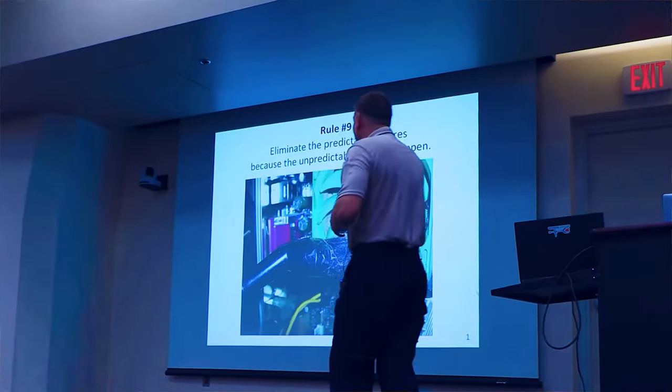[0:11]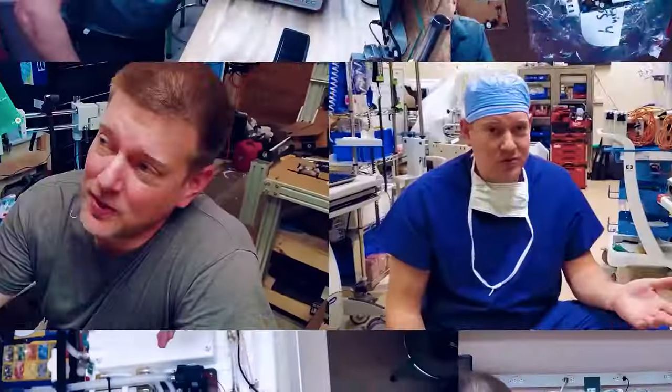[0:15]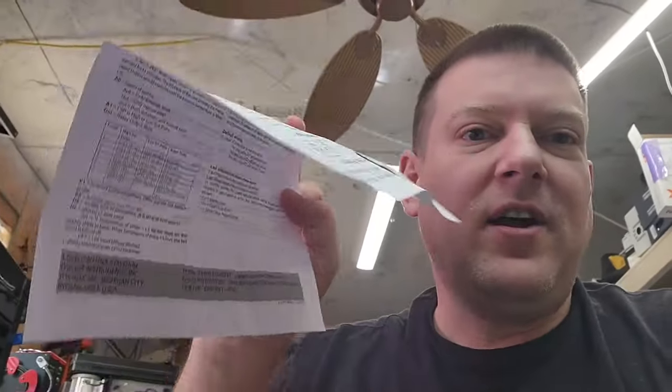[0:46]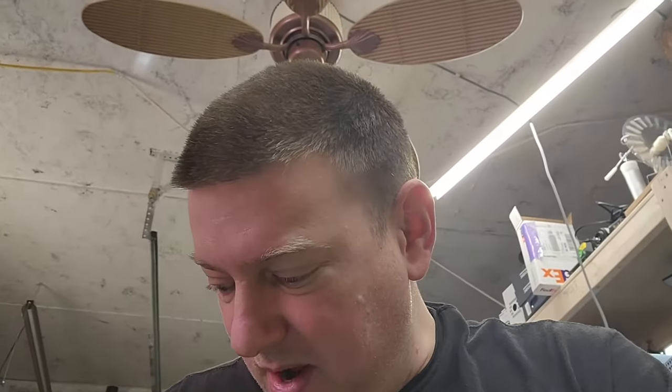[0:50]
Today's a day of frustration and learning and more frustration. Well, guys, I'm installing a generic temperature controller into a water bath, really. And the problem is the coding instructions are so complex. And this is an American-made product. Well, actually, I think the controller is made in Spain. However, these instructions were written by people in Indiana.
Is that the problem? Given I was growing up in Michigan, yeah, Indiana's the problem.
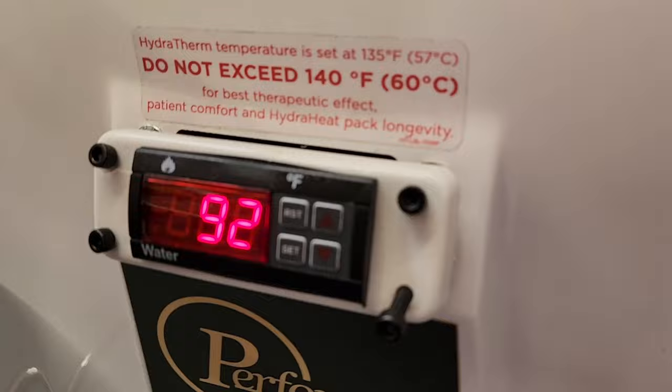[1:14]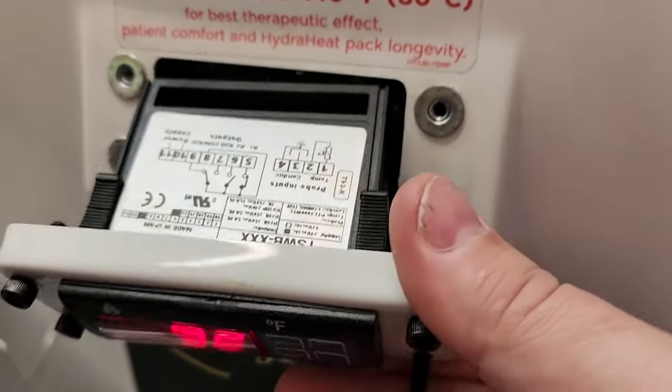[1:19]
Anyway, guys, let's go ahead and take a look and see what I got. What a frustration this is. I'll show you what steps I've taken and where I'm at. This is it. This is the Performa. This little controller right here took me forever to get in. Took me about 5 or 6 months.
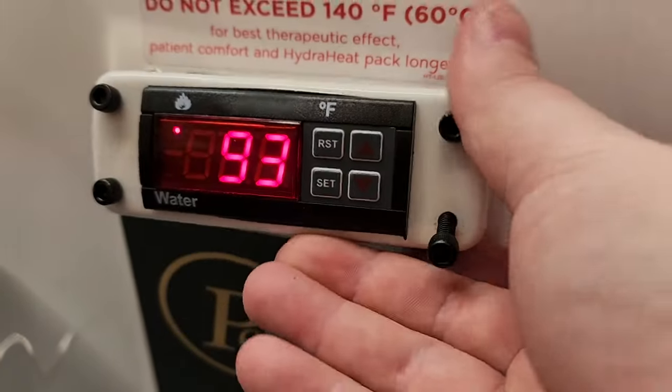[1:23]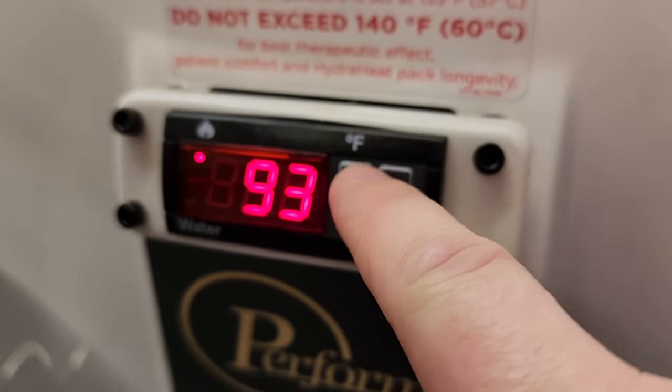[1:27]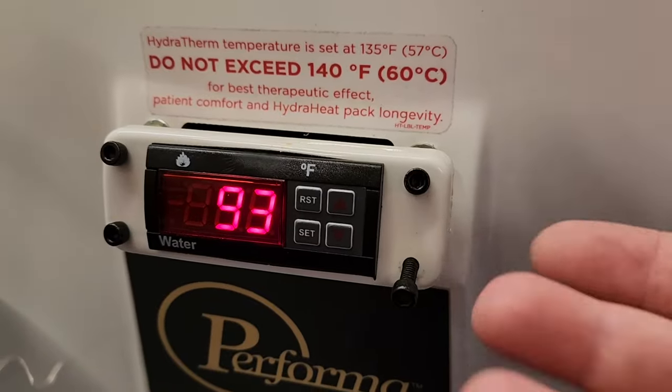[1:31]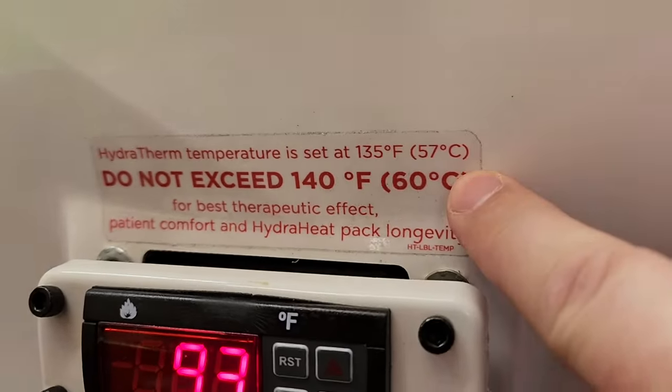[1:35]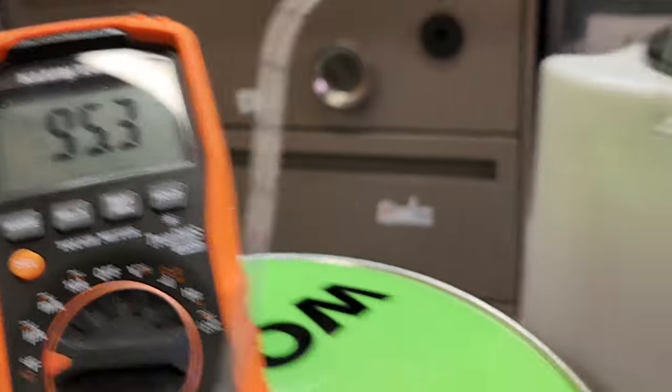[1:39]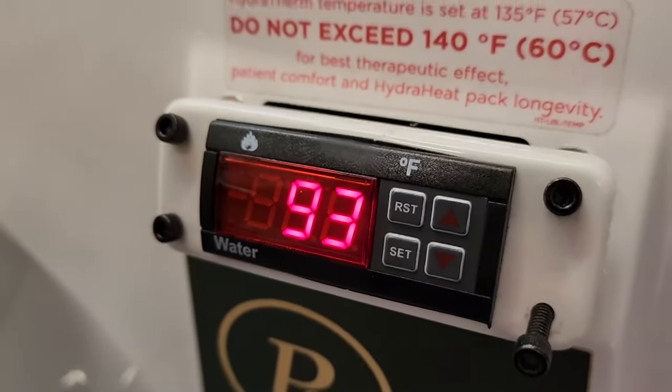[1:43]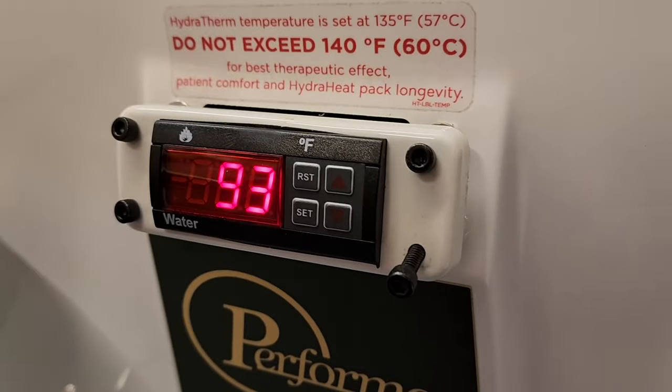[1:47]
That's the TSWB. Now, there are various models. There are some for heating, there are some for cooling. And this one here can be set from degrees Fahrenheit standard to centigrade, but right now it's in Fahrenheit because, as you can see on the instruction label, that is what they're looking for. It's currently heating, and you can see the little flashing light in the corner that shows that something is happening. It took me easily an hour to get to this point.
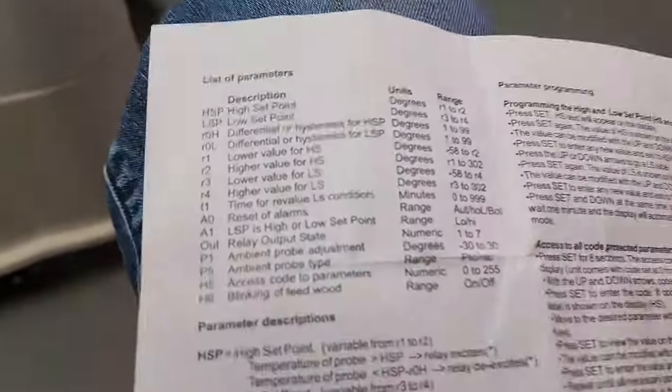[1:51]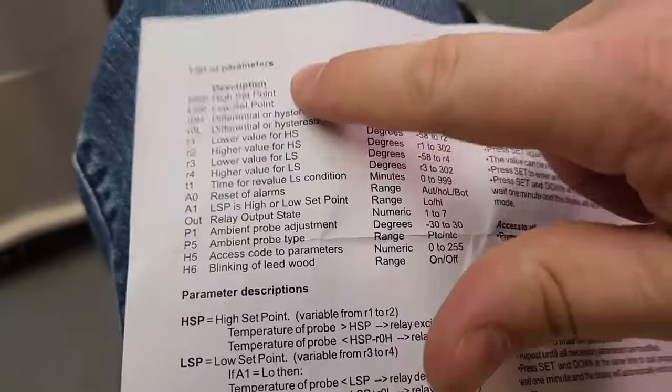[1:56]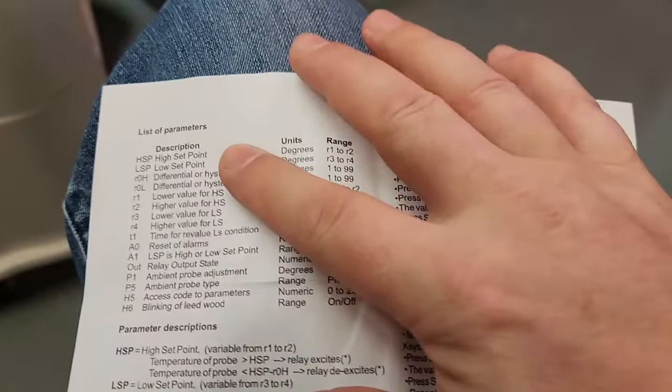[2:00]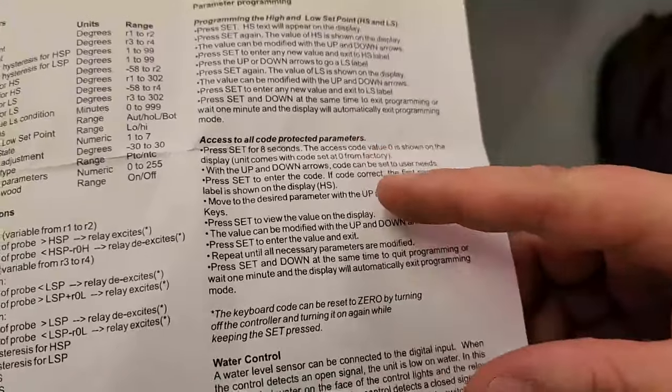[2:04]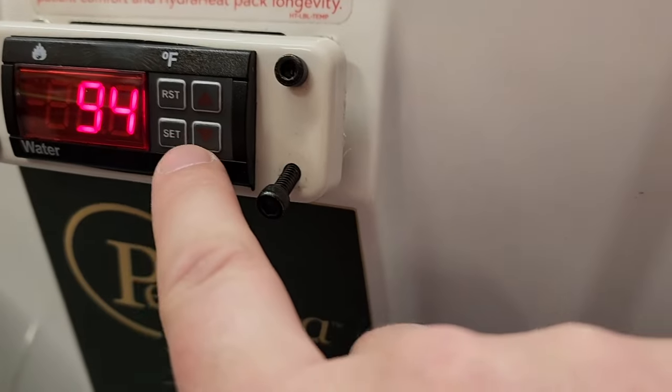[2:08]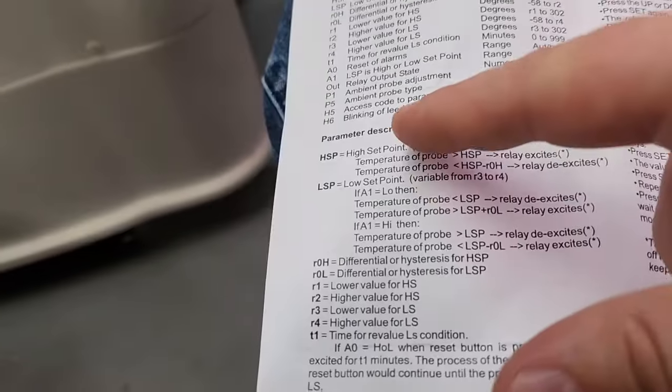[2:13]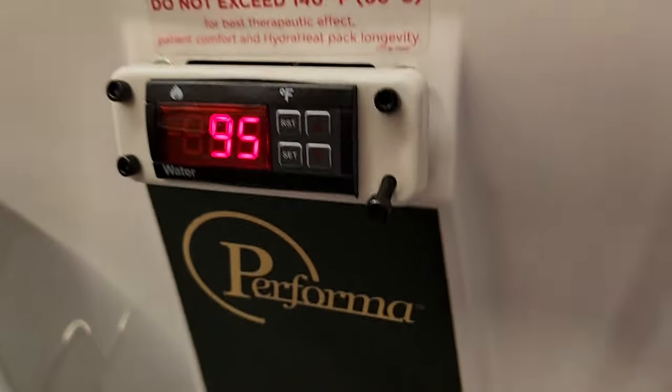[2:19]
The instructions are absolutely ridiculous. You can see that there's a high set point, there's a low set point, which is all that you normally see from the first menu. However, you have to go into a special menu, which you access by holding the set button right here. You hold this for like 8 seconds, and then it allows you to get into this extra menu of all this stuff down here. Let's go ahead and show you how I got to this point.
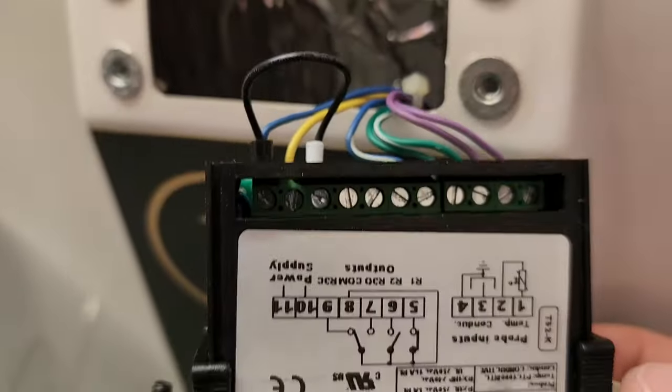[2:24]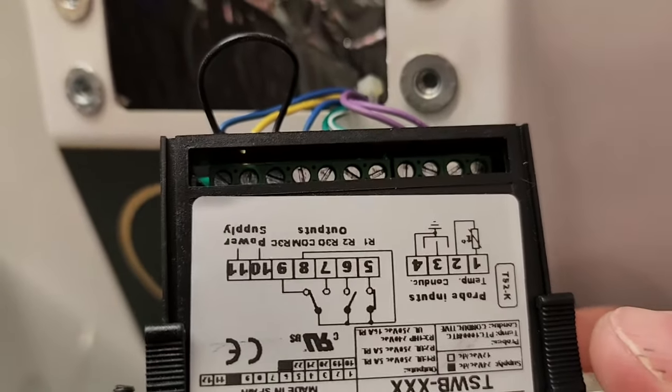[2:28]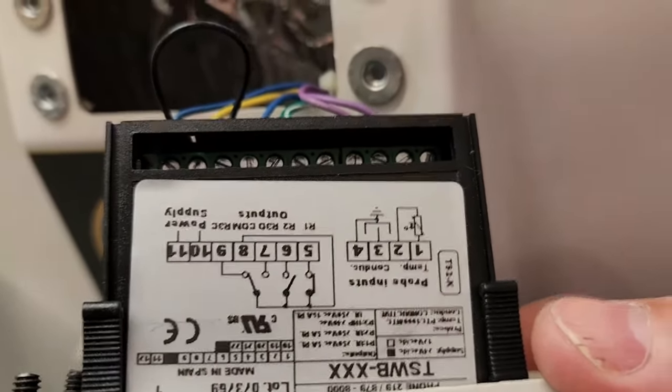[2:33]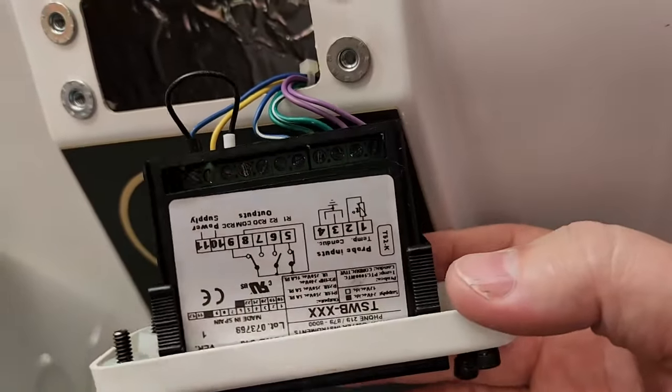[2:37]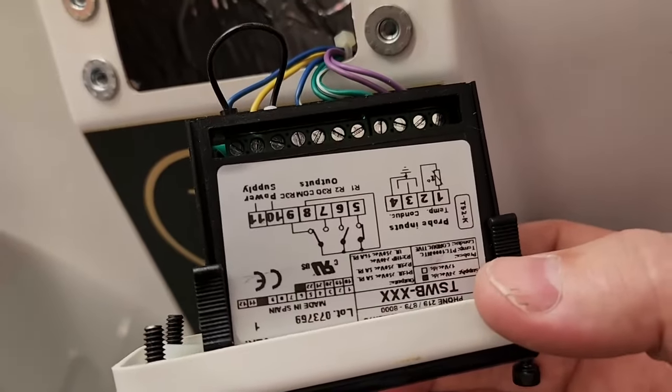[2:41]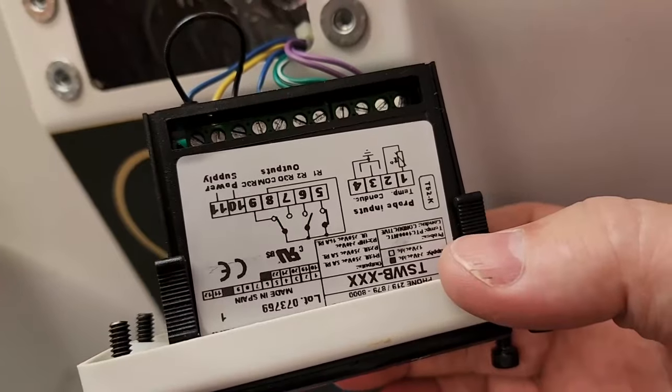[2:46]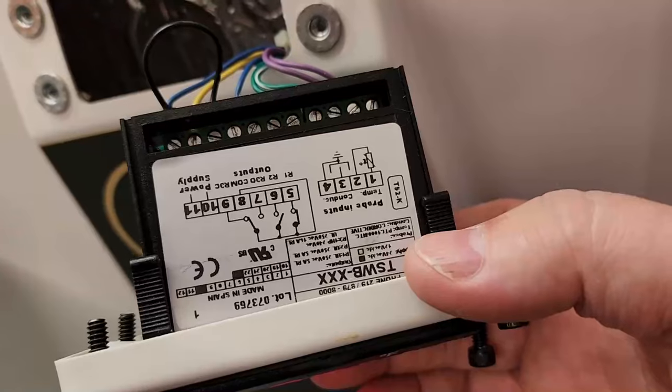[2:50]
I guess we should start out by discussing the wiring. So you can see I have one jumper right there on the power supply that goes over to terminal 9. Really weird. I took a photo of the original old unit that shorted. I did a video on that. It actually caught fire on a live stream. And that is how it was wired, oddly enough. So it disconnects at 9 and I believe at terminal 5. So 9 and 5 are both disconnected.
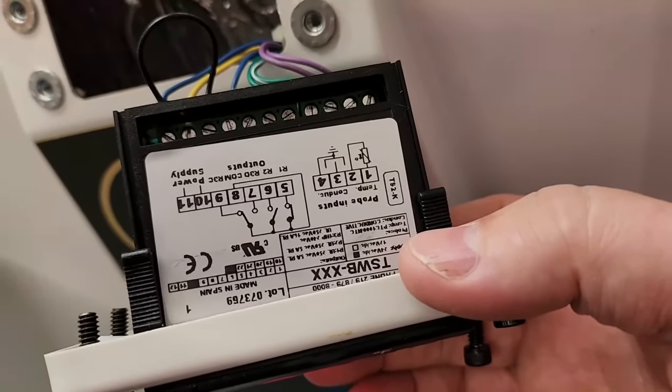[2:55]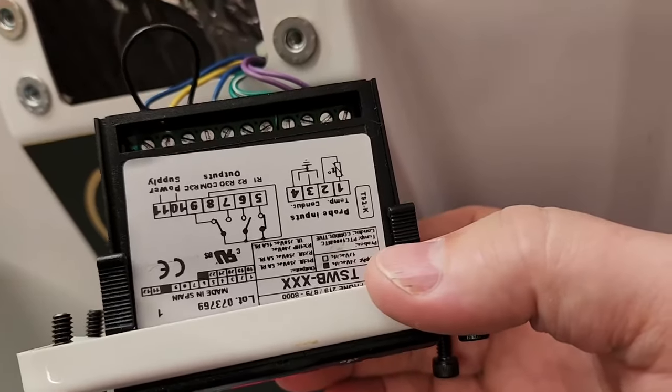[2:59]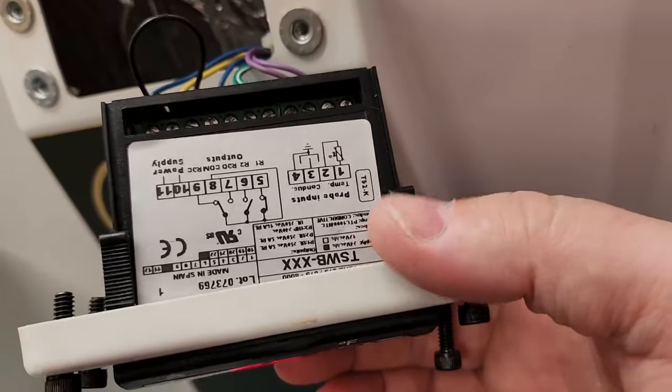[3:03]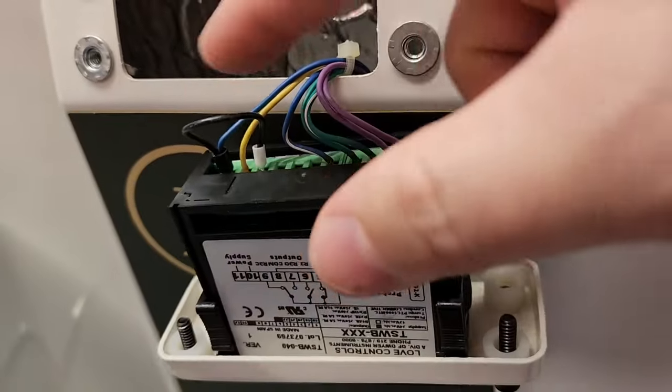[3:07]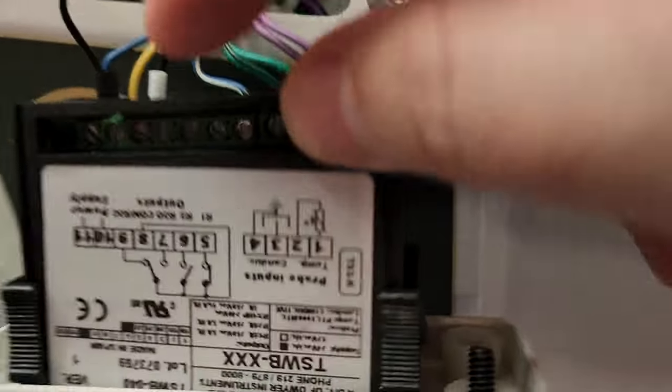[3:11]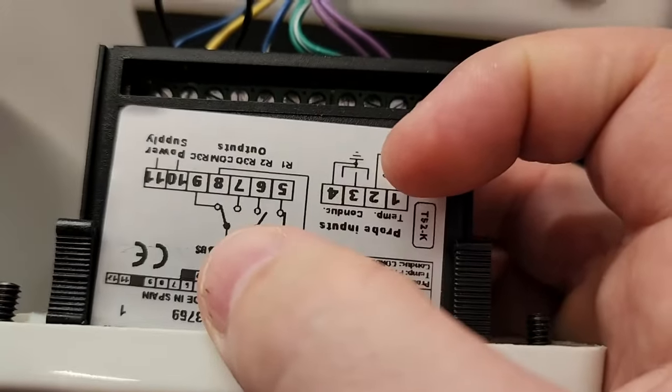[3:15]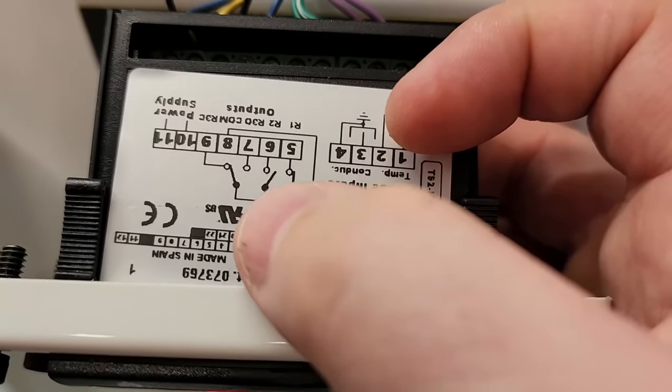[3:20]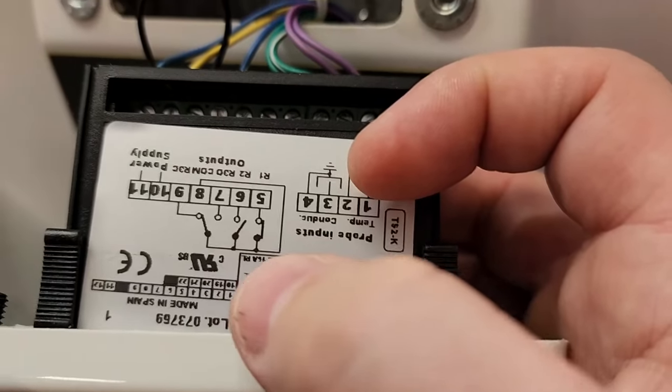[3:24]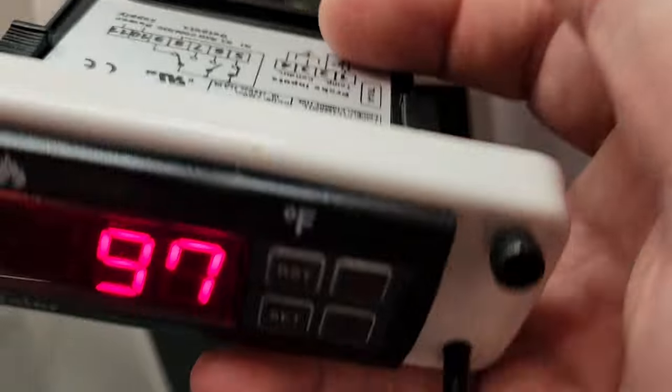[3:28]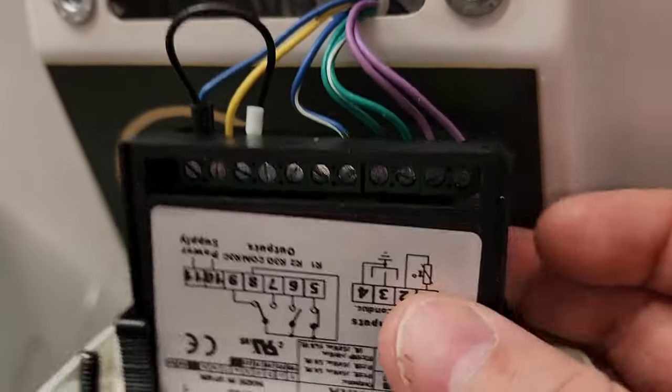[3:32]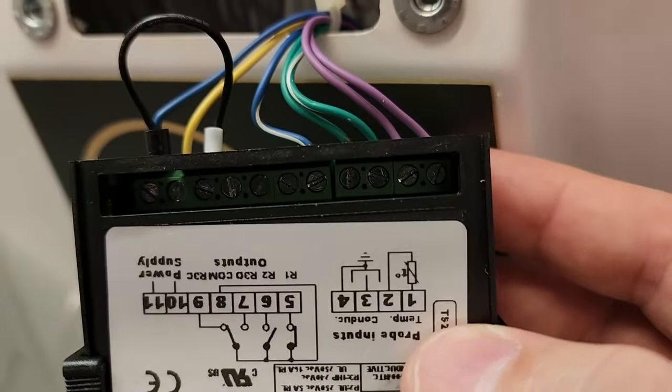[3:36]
Really weird. You would think that it would be connected to terminal 8 and then terminal 5 or 9 would be switched, but it switches both ends of the connection. It's really weird. So you can see right there that it's jumpered right here to terminal 9. And based on this circuit description, 9 is normally closed and terminal 5 is normally closed. 6 is normally open. You would think that 6 would be engaging. Anyway, I'm just hooking it up exactly how the OEM had it, and you can see over here terminal 5 is going to be disconnected.
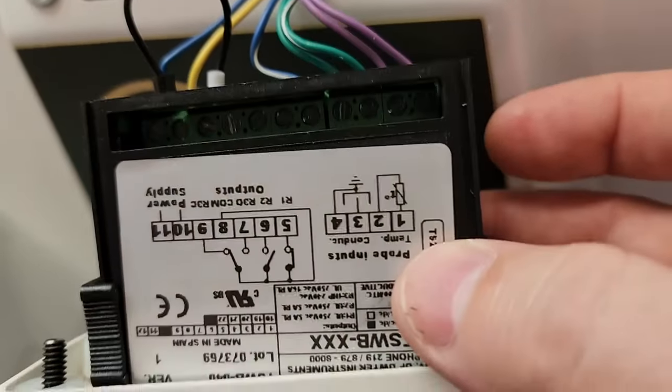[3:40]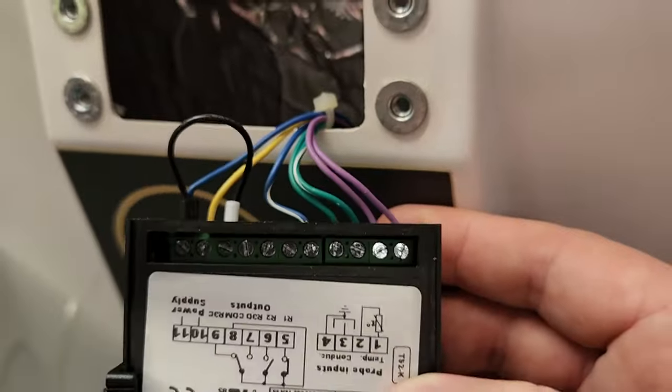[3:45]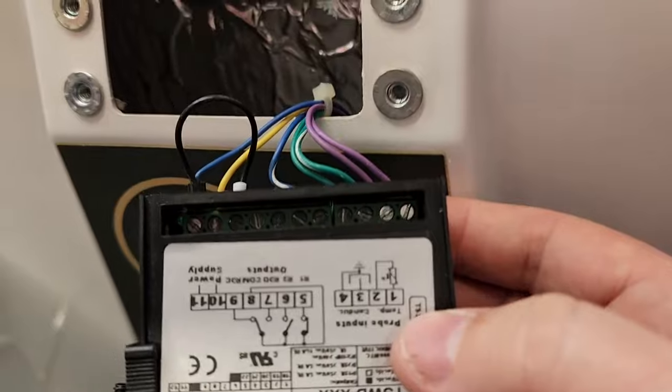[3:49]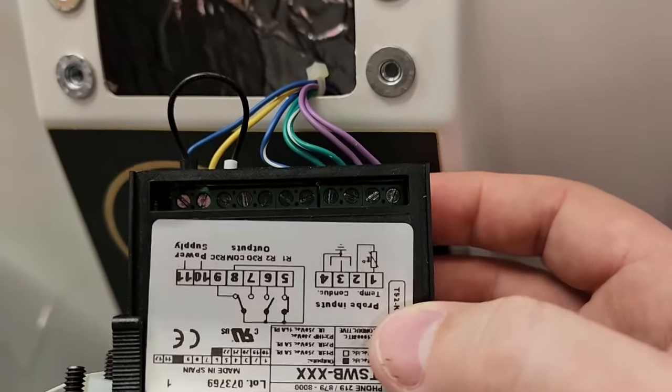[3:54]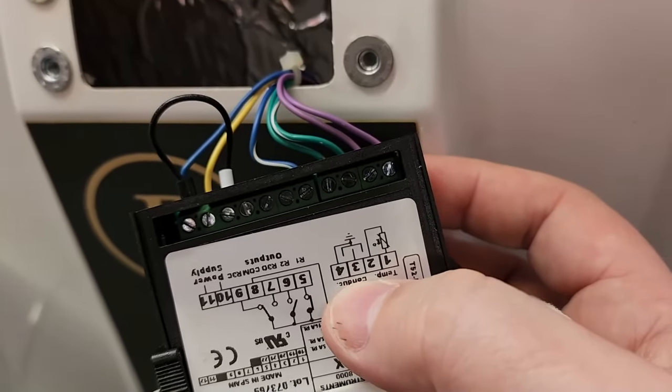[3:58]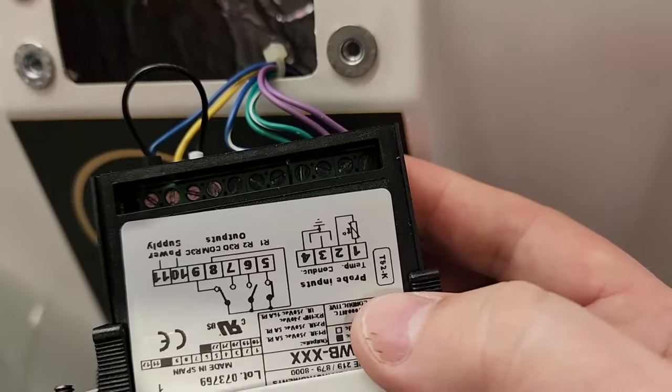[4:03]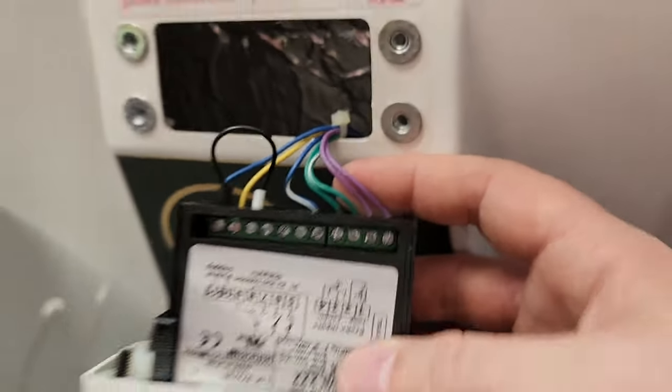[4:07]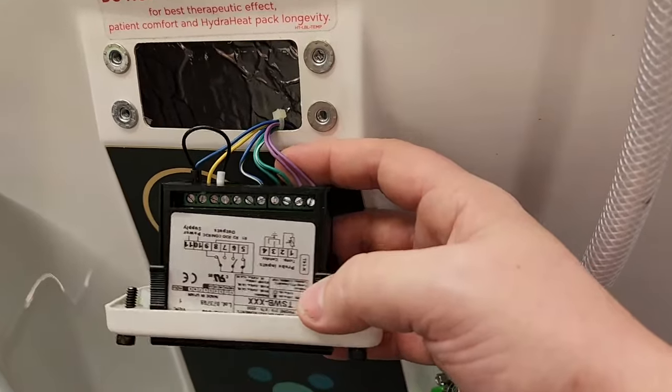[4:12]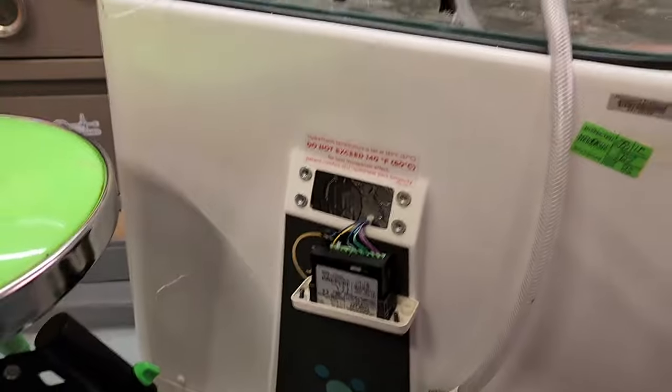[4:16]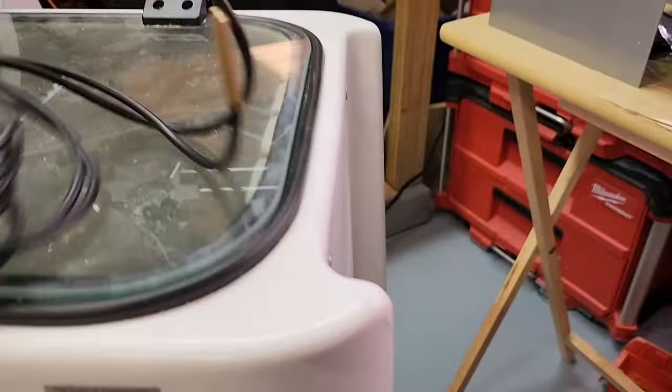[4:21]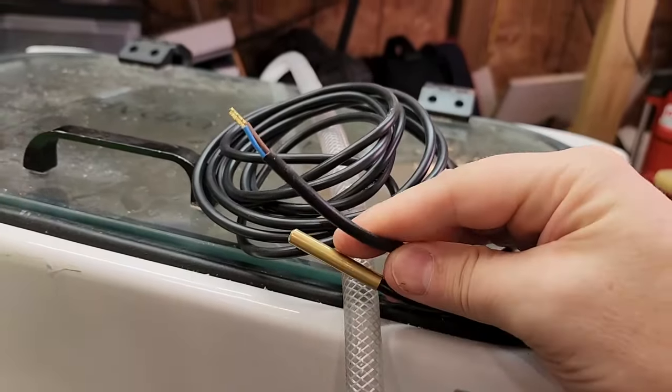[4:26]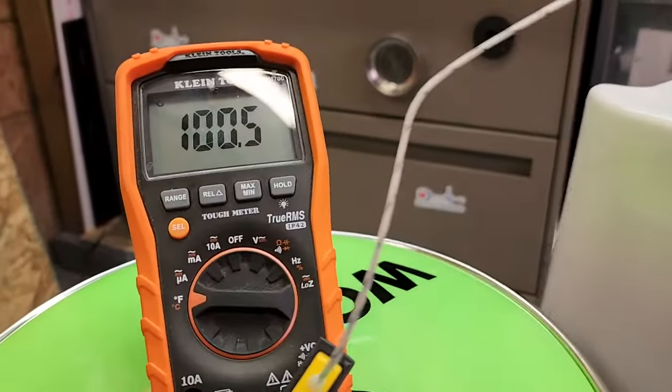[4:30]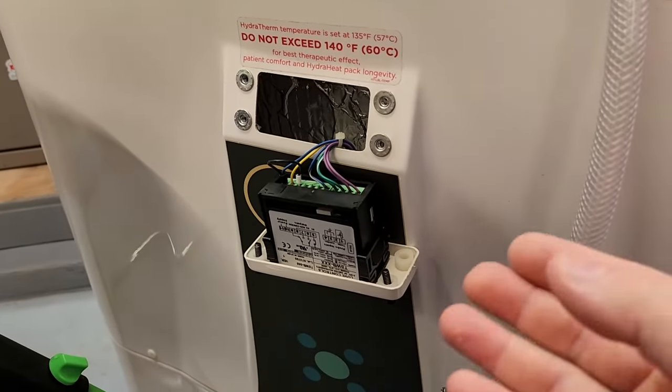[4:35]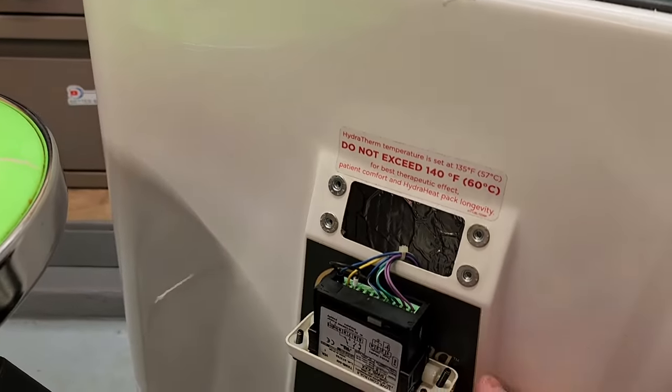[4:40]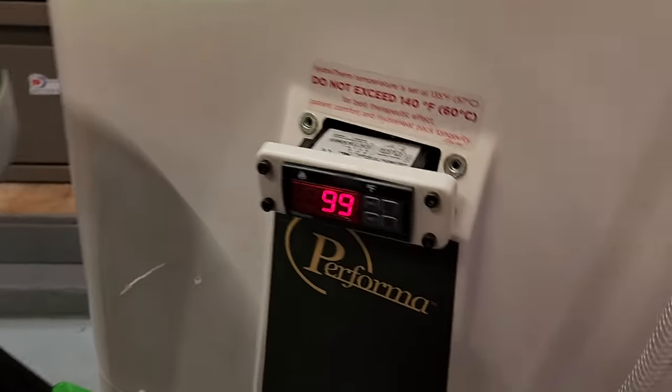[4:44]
Now, this unit did come with another probe. Hold on. Where's the guy? So it did come with a different probe right here. I'm not going to use this because the old one seems to be working just fine. So you can see my meter is going up. It is functioning. It is doing something. Whether or not it shuts off at the point that I want it to, that's a whole different matter. However, if we put this guy carefully back in, like so, you can see that it's close.
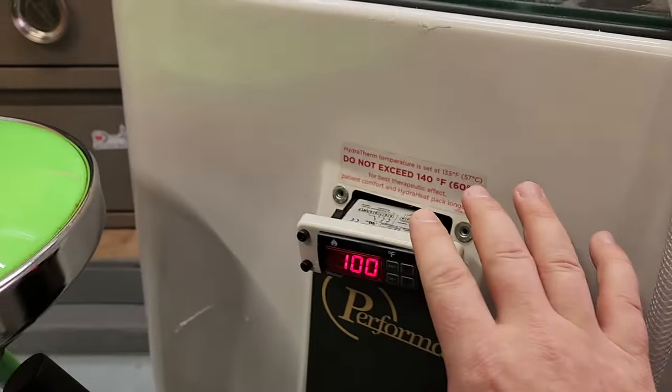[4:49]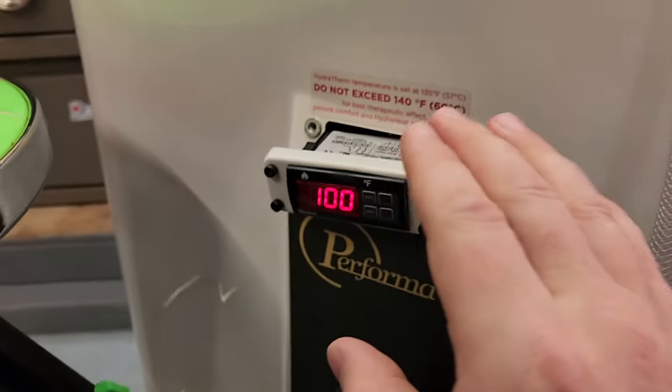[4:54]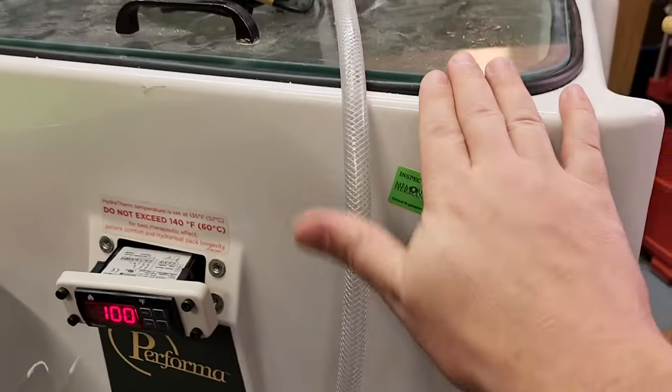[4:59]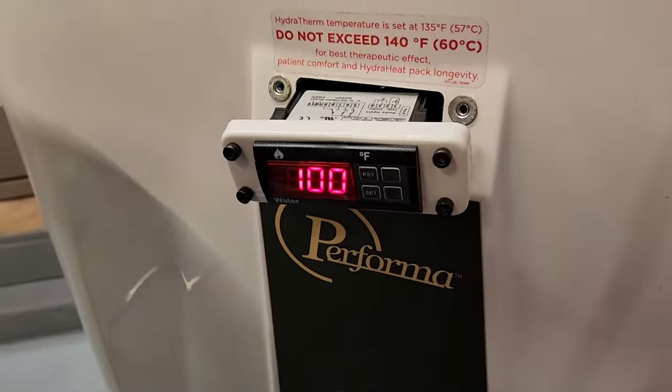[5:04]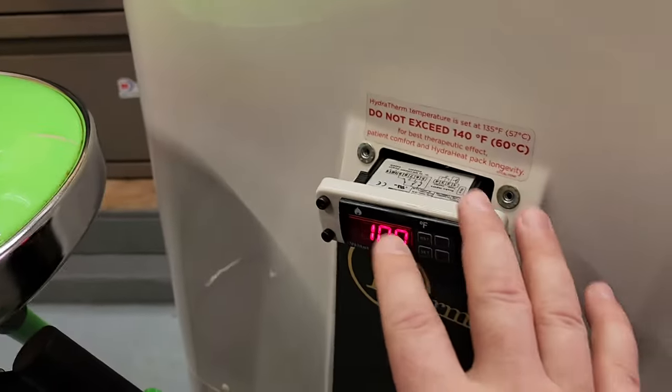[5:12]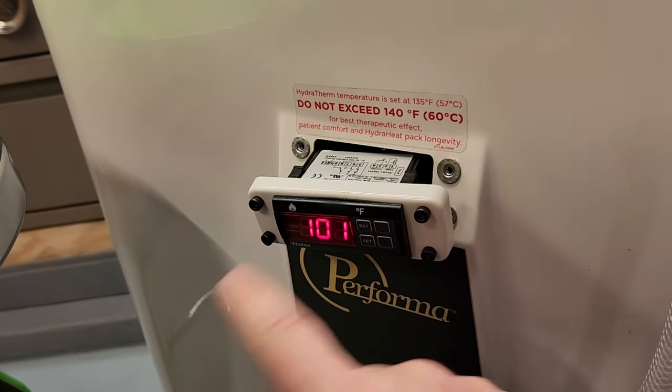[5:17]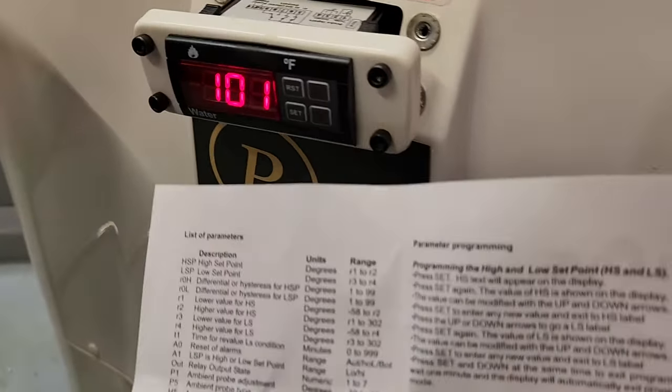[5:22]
Now, once it gets to a stable temperature, that's when we can calibrate the temperature. I basically hooked this guy up just to get it to a rough set position, because you have to adjust the offset of the existing temperature probe which is inside. So the NTC that's embedded inside the cabinet, you have to adjust that to get it close. So now that it knows it's close to the set temperature, we will let it stabilize, probably for a half hour to an hour. And as it stabilizes, then we will actually do a temperature calibration. But this is just to get it close and to get it to stabilize somewhere.
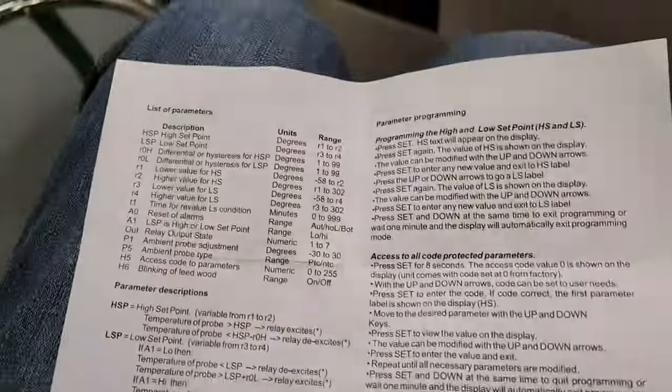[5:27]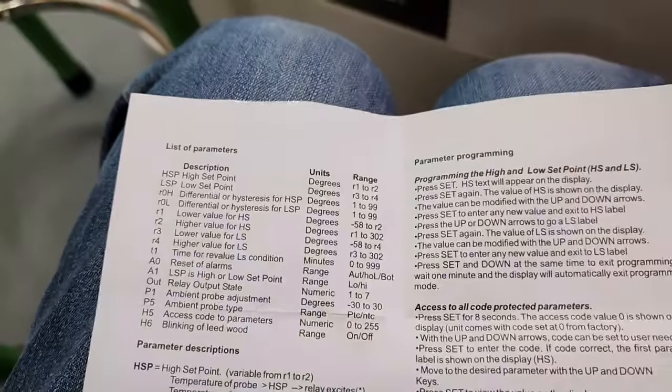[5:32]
So what were some of the complications I ran into? Well, high set point and low set point. The high set point only goes down to 165 degrees.
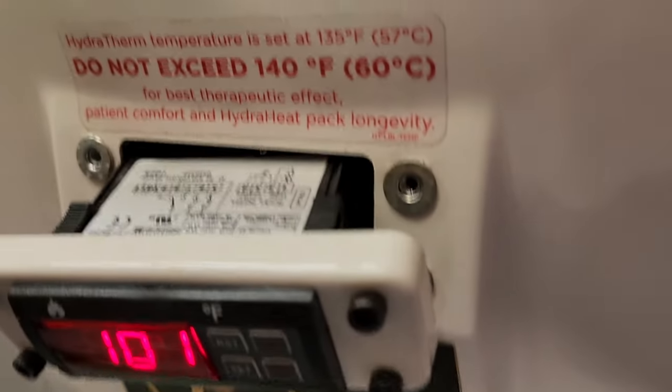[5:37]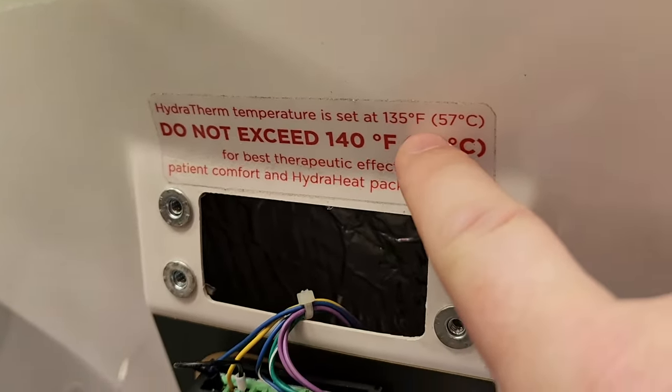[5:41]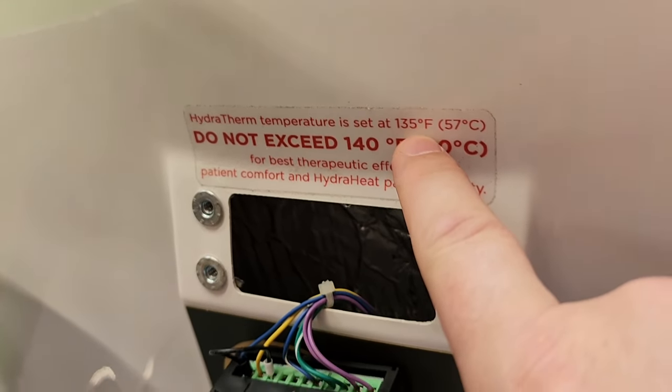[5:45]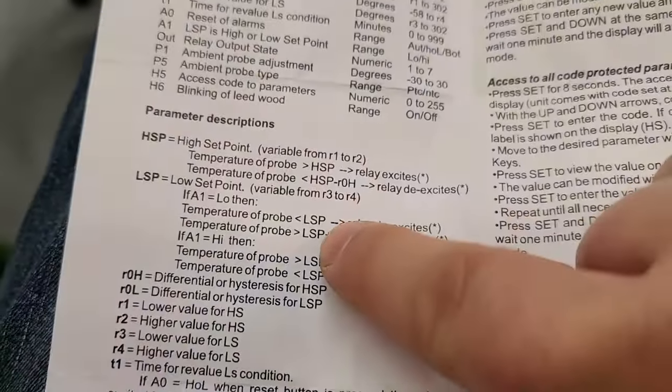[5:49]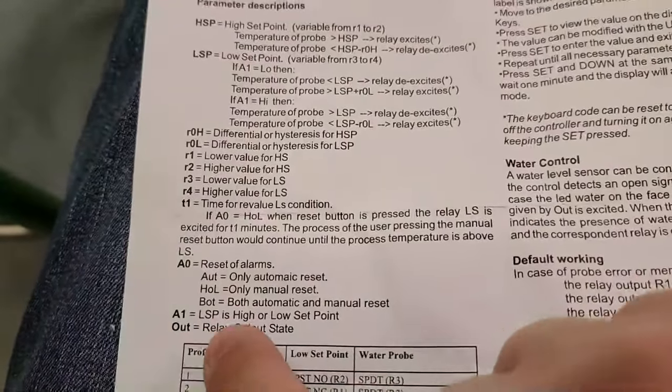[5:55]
I do not want to melt this plastic cabinet. As you can see, stuff's falling everywhere. It is supposed to be set at 135. Now, the only thing that could get to 135 is to go into the low set point, which means A1, which is one of the settings that you'll scroll into, has to be set to high or low.
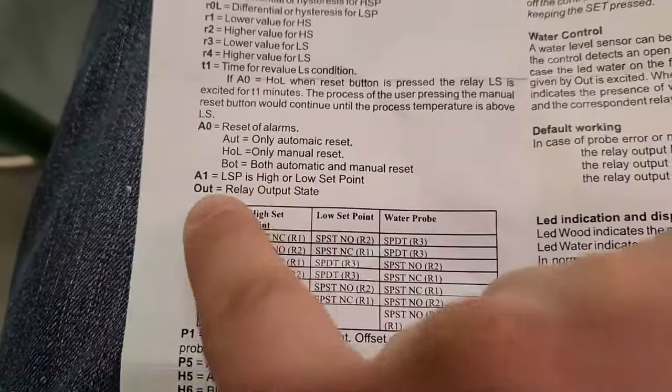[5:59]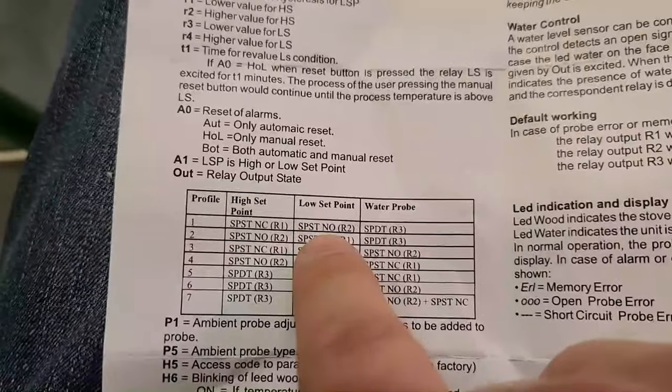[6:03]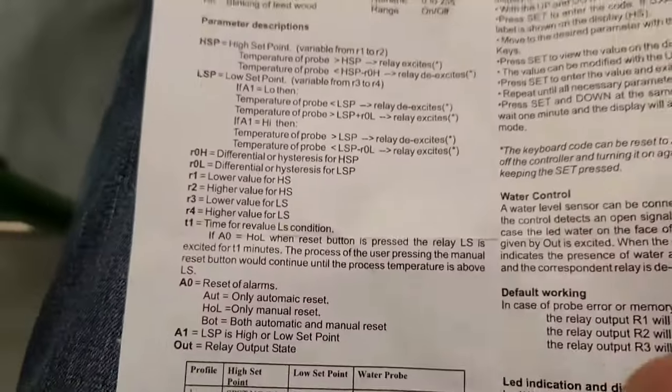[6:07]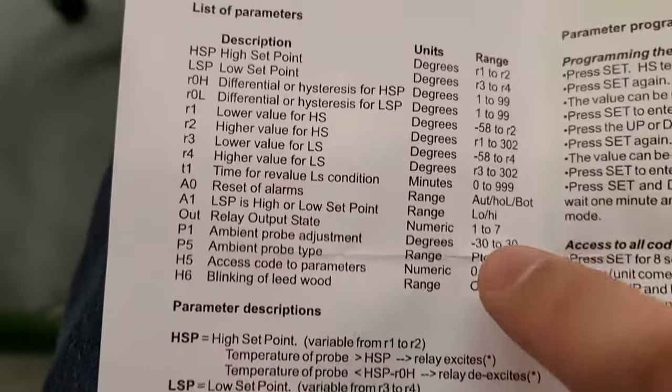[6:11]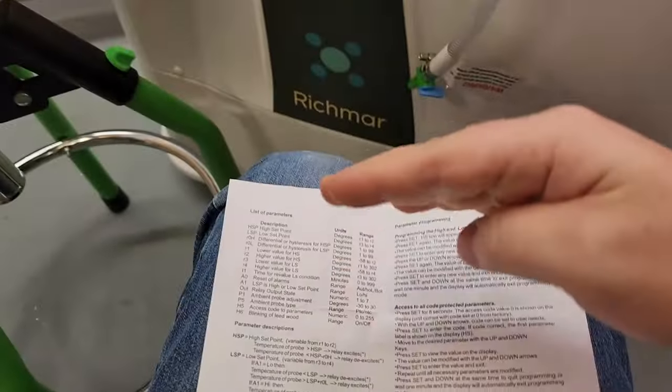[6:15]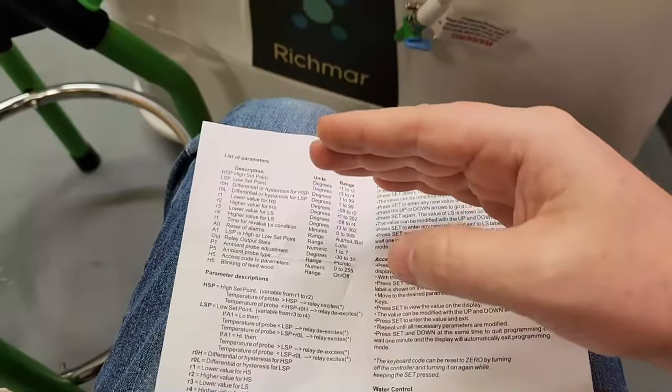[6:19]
You have to set the relay output state. And for me, I set it on profile 2, I believe. And then you have to set the hysteresis. Okay, and the hysteresis right here is once you reach that set point, at what level do you want it to kick back on? How many degrees?
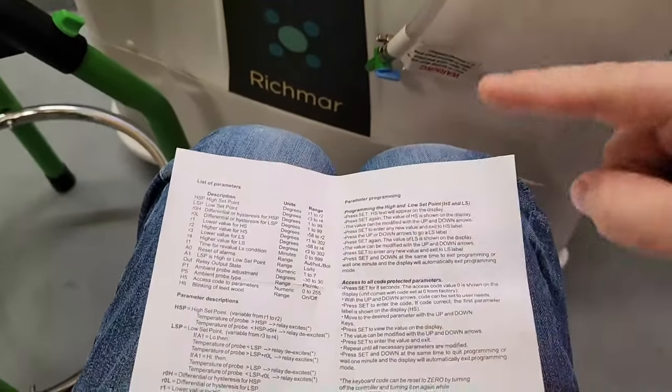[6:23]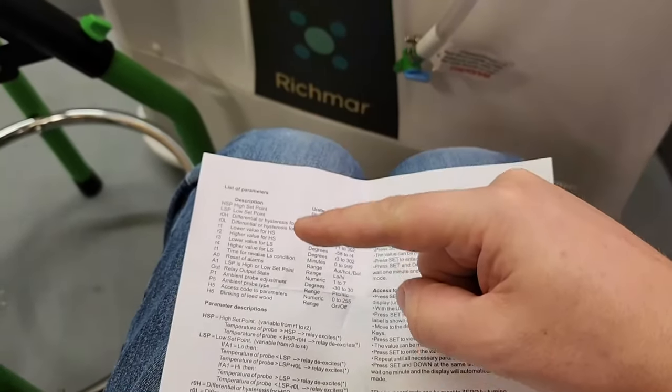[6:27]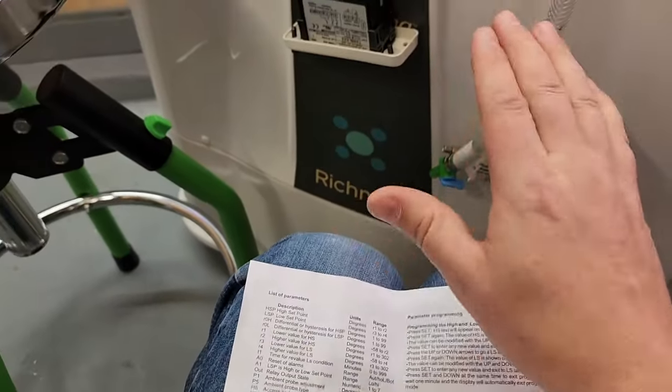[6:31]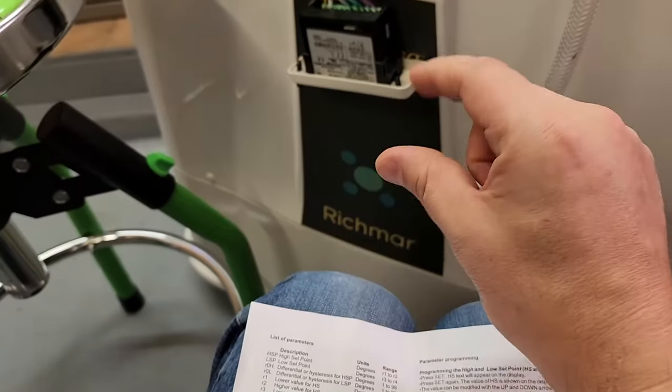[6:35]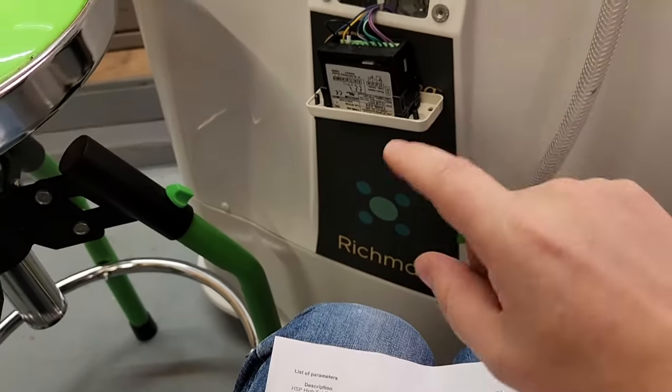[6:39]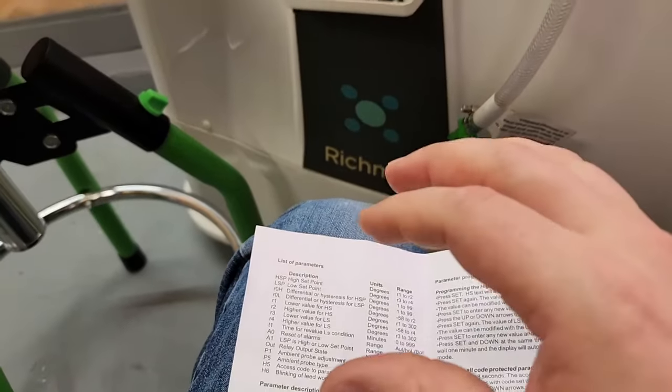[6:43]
So basically, imagine your temperature like a sine wave. It'll reach the top, it'll shut off. How long do you want it to go into a resting state before it kicks back on? I set it to 5 degrees, default is 10 degrees. We'll see, the lower the hysteresis, the more energy it's going to use. And at the same time, the more wear and tear on all the components. So 10 degrees might be close.
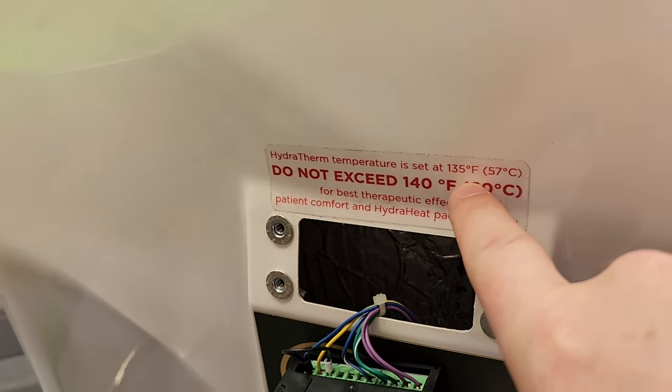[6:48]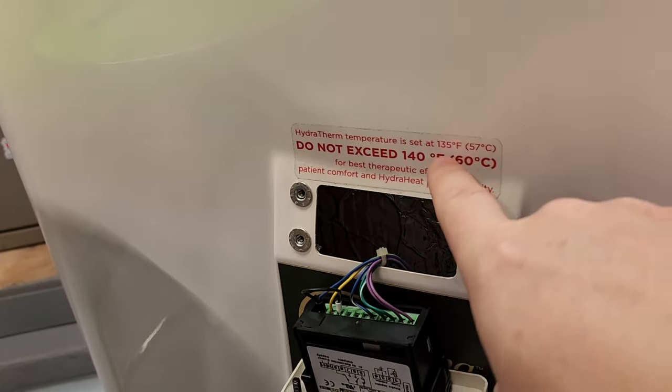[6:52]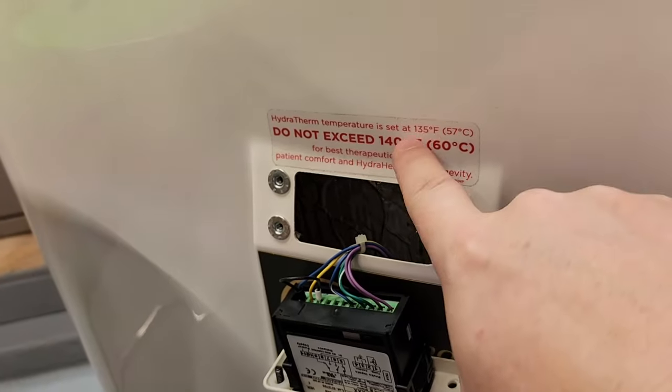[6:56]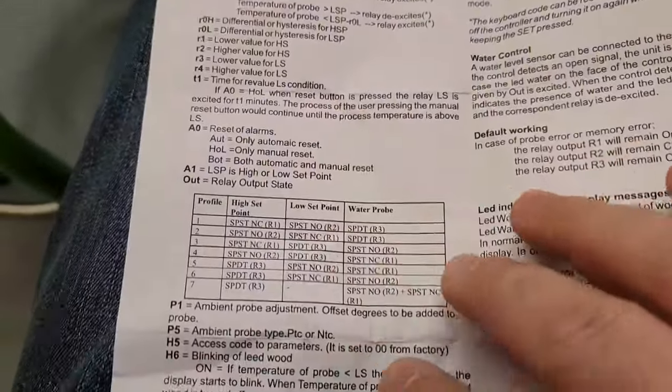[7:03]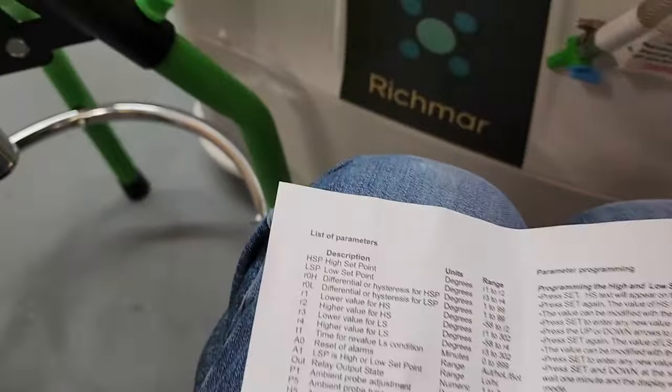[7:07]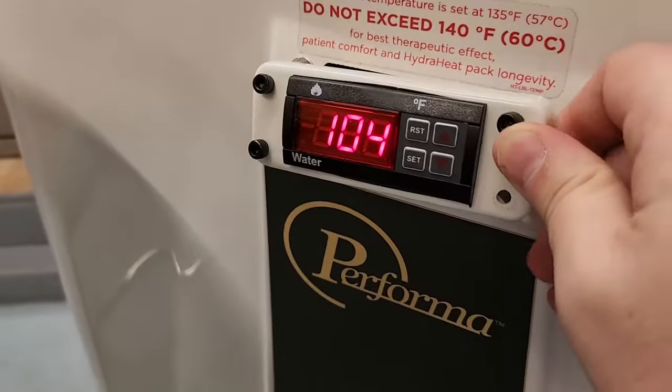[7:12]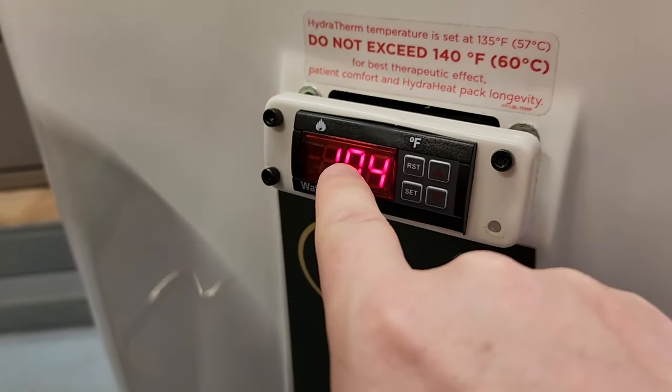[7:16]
I set it to 5 because 135 degrees for a hydrocollator is already kind of a low temperature. So that means it's going to go down to 130. So the hysteresis, I have it set at about 5 degrees. Close enough, right? So anyway, guys, this has been one heck of a process. And the really satisfying part, as long as it doesn't melt, is the fact that it is heating. You can see right here, it knows that it needs to heat.
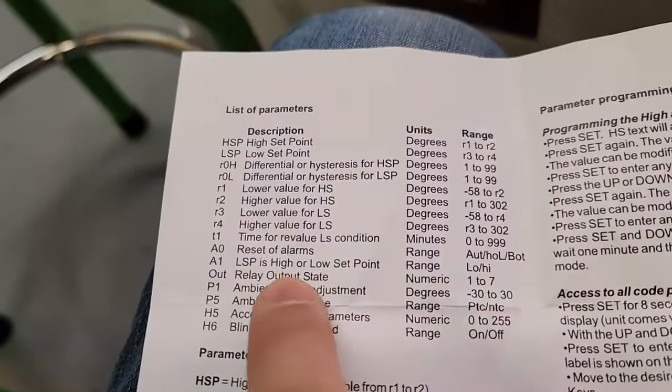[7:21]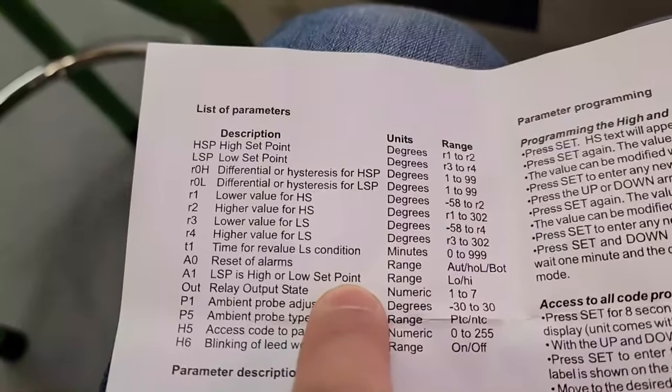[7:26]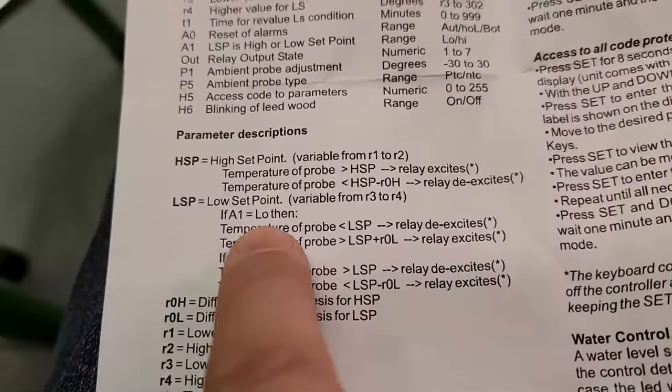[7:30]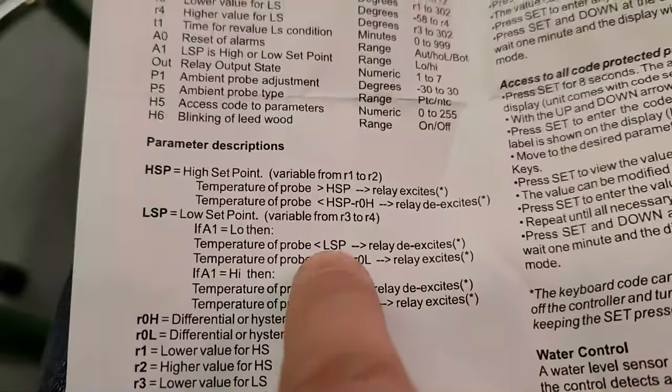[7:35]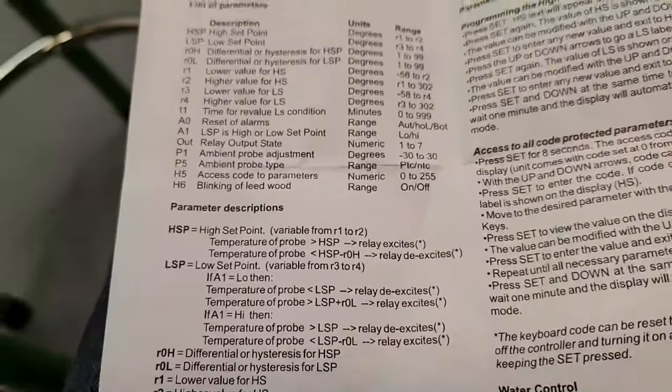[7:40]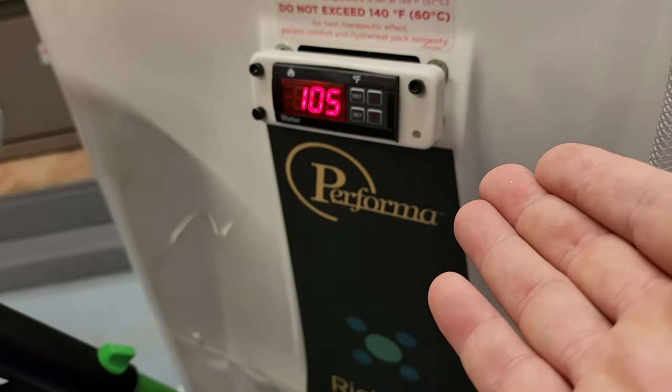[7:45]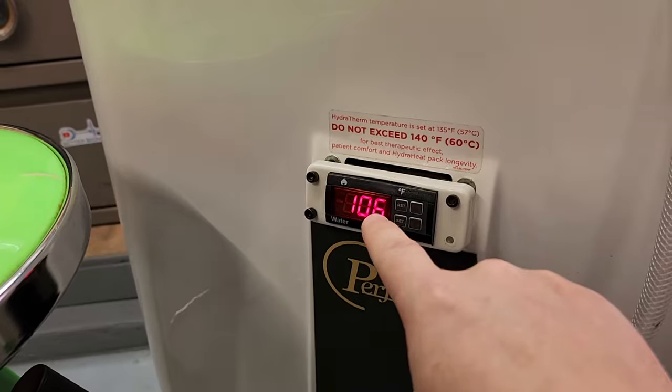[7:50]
I set it to be, let's see, A1, LSP is high or low set point. So A1, I have it set to low. And that is because when A1 is set to low, the temperature probe, when it is less than the low set point, the relay de-excites. We're going to find out if that's really supposed to be what it's supposed to be. Hopefully at 135, this guy opens up. And if it opens up and then it starts to stabilize, I know I have it set correctly.
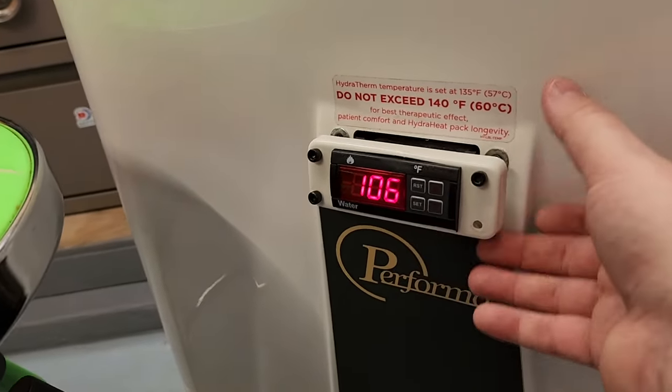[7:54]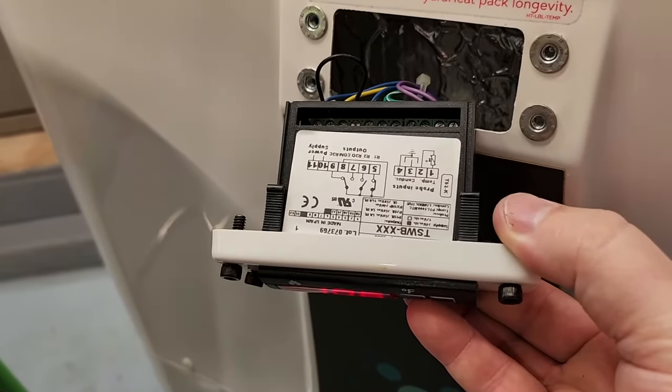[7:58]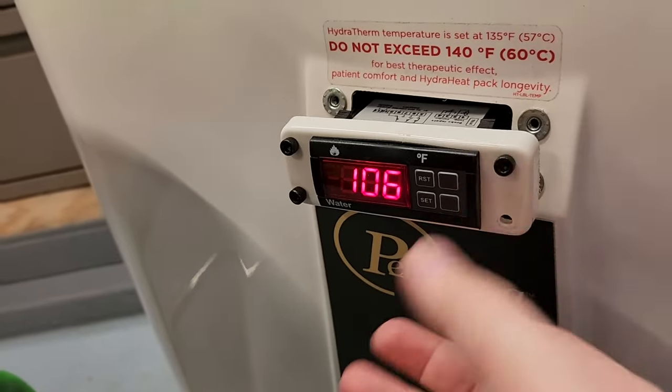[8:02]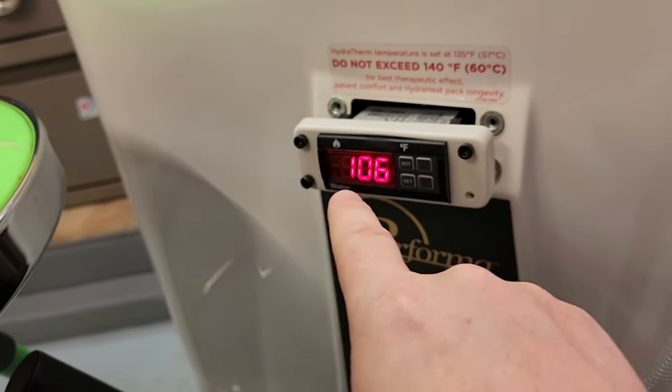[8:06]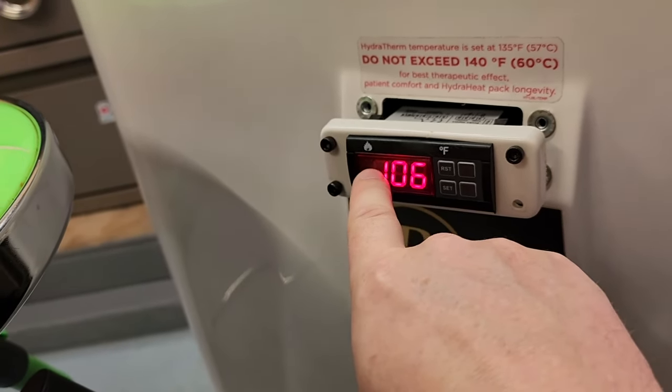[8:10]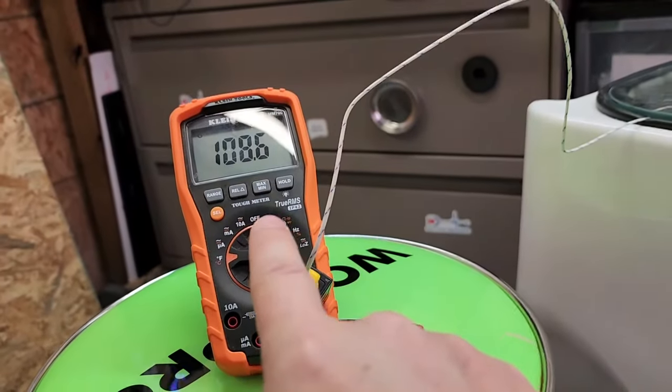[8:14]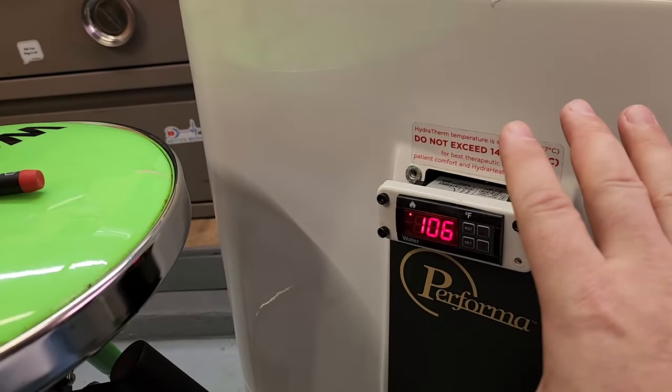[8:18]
If not, then one of my wires, I'm going to have to move. You see pin 5 and pin 6 right there. I will have to move that wire over. As long as this is flashing, it knows that it has to do something. It knows that it's heating. So I'm hoping at 135, this guy stops flashing, this temperature stabilizes, and I can set my offset for the negative temperature coefficient, and we're going to be good.
So, guys, that has been my journey this morning, is trying to interpret horrible instructions. And there are no videos online on how to set these temperature modules. Now, mind you, this temperature module, it is a pretty standard part. You see these on refrigerators, freezers, you see them on heaters, on thermal cabinets, on incubators. These things are everywhere. And they're so poorly documented on how to reinstall. Most of the time, people will just buy a static OEM part. However, the OEM had an unlimited back order on this, and I was able to track down the part.
That is the TSWB, the original component. Only thing is now I have to program it. If we were to get it from the OEM, like I was hoping to do, then I would normally be able to get a pre-programmed unit. You pop it in there, you do your temperature coefficient, your hysteresis and all that is all set. You don't have to worry about that. I have to do it manually because the only place I was able to get this component was online from another vendor. It is the correct component. I just have to make sure that all the settings are correct.
And that means that this guy is going to run for probably the next day to make sure that it maintains a stable temperature. Odd, but that is just one of those things that we biomeds have to do if you get a non-OEM configured part. Now, this is the same part that the OEM uses. It's the exact same part. Some of the programming might be different, like the hysteresis might be different. I would never know that. The old unit caught fire, so I could never find that out. And since I was unable to obtain a part from the OEM, this is the only way to get this unit back in service. So, guys, that is the temperature controller.
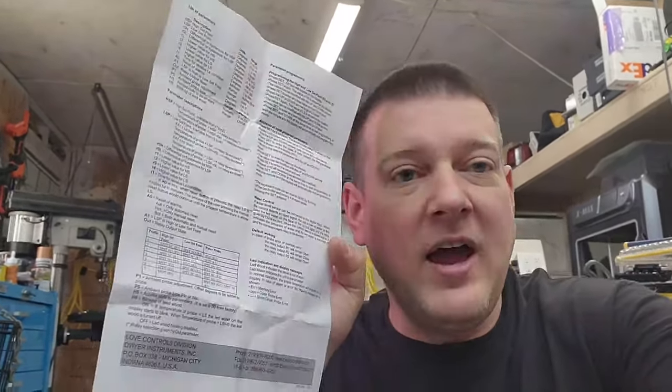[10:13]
The data sheet is online, plus it's here. And it's a very versatile component. It's just I really wish it was easier to program.